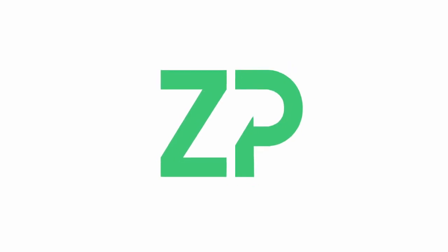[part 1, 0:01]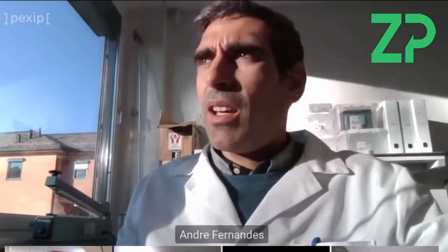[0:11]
I'm a scientist here at Zimmer & Peacock. I'm based in Norway. What I'm going to try to demonstrate is a typical characterization test that we make for every batch of glucose sensors that are fabricated. In this case, in order to have a nice staircase response, I'm actually going to use a beaker test.
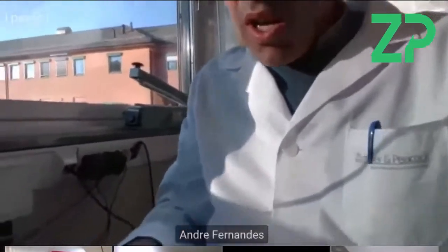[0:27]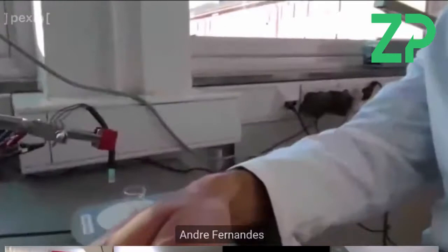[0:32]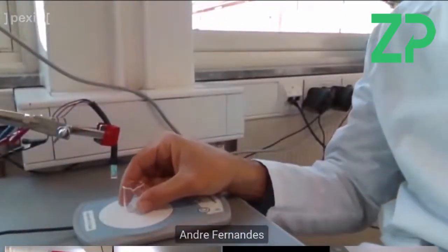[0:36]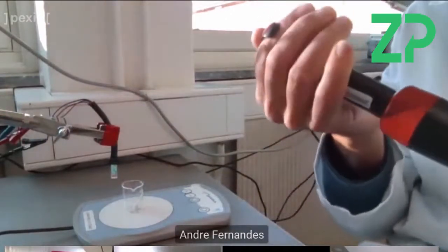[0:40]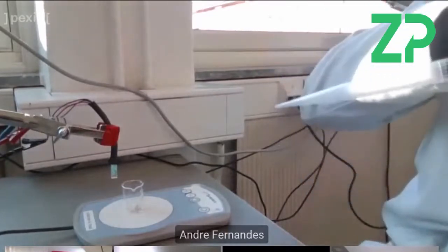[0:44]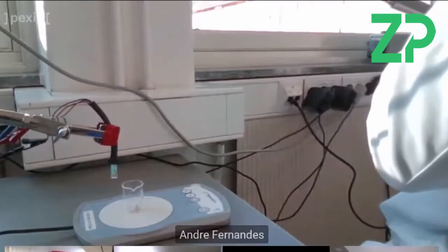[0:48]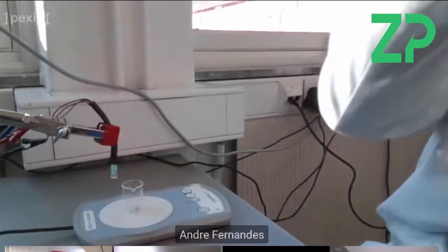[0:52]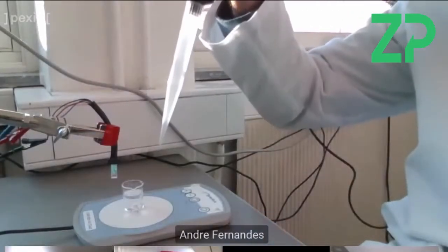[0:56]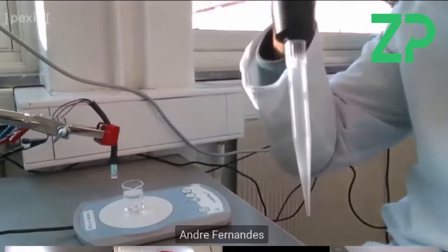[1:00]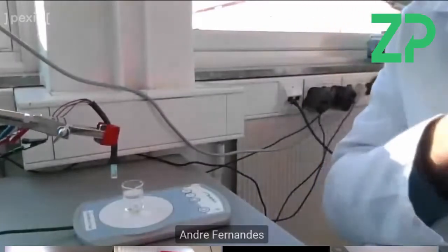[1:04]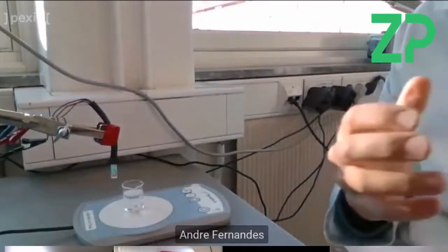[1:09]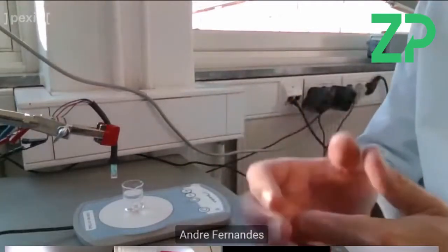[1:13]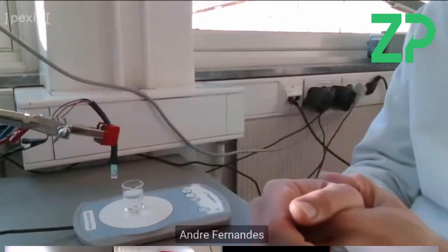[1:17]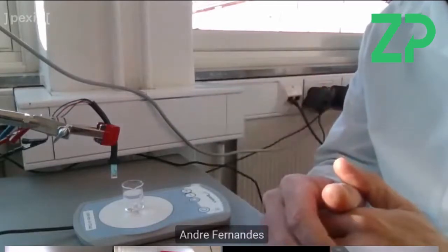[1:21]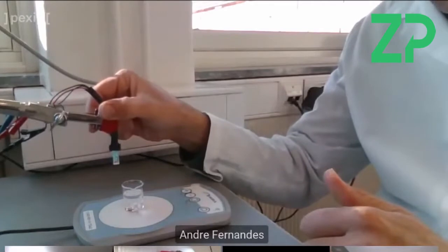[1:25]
I'm not sure if you are able to see what I am showing, but basically I have a beaker here, and I'm going to pipette 5 milliliters of phosphate buffer solution. And then I'm going to titrate different glucose, 1 molar of glucose in PBS solution, in order to measure the step response to different concentrations of glucose. So I'm going to pipette 25 microliters of 1 molar glucose in PBS, and like that I'm going to do 5 millimolar steps.
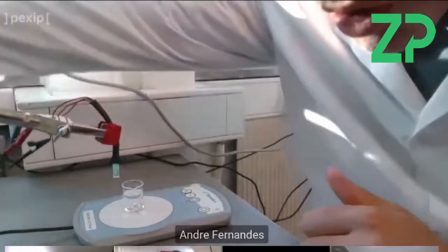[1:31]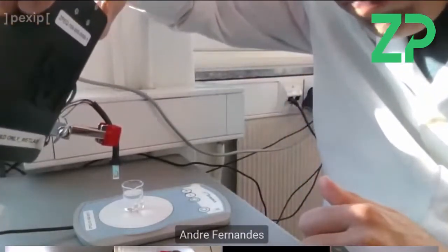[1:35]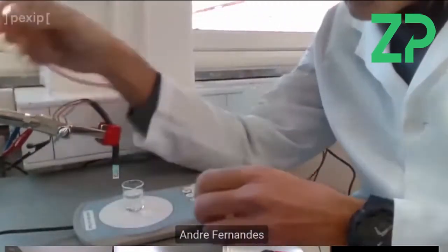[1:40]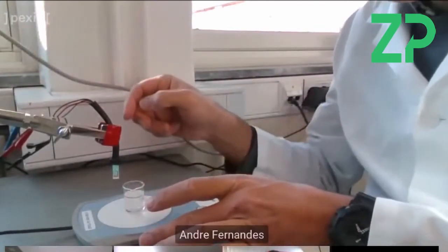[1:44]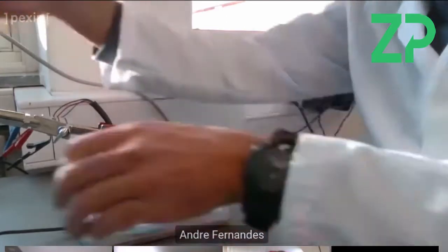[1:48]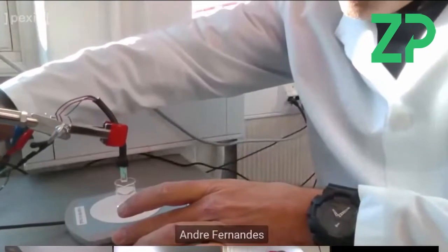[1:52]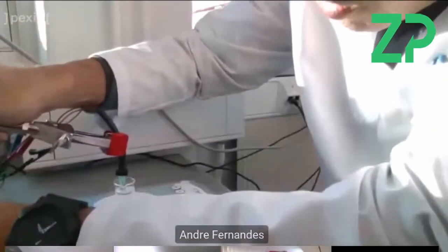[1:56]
This is one of the ZP glucose sensors, and this is all connected to one of our potentiostats. Now I use stirring in order to avoid any kind of depletion of glucose at the electrode, and so by using a stirring bar, and now I'm going to dip. Try to only immerse the electrodes.
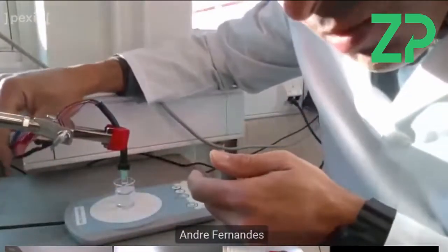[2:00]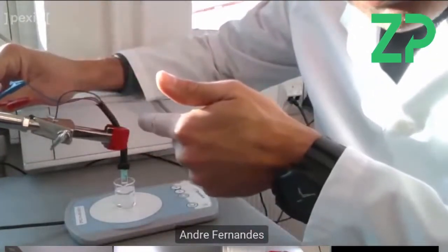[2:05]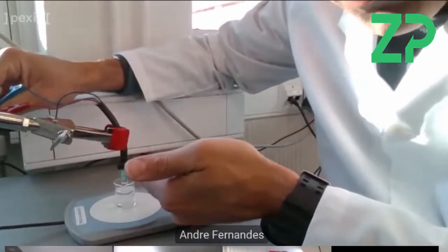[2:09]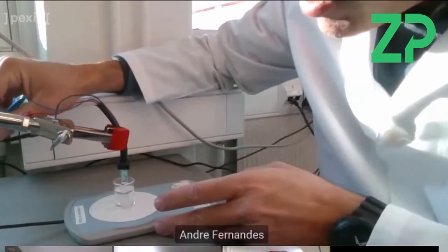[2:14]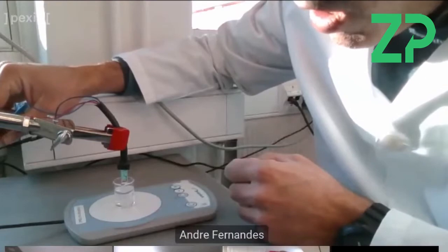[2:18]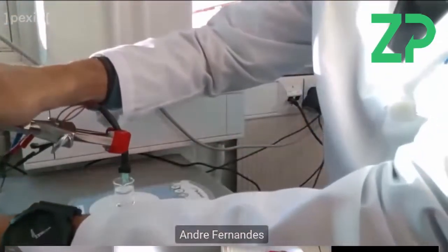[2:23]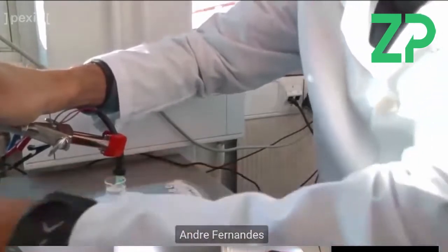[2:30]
This is important. As you can see, these are the crocodile clips that are connected to a connector that actually is connecting to the sensor physically. This is just a standard connector with a standard pitch. We are connecting it in this way. We have details about this connector on the web store, I believe.
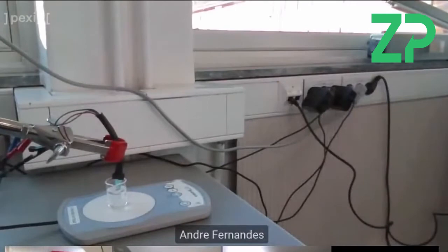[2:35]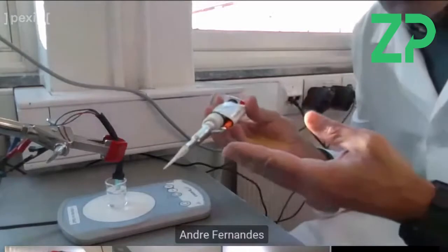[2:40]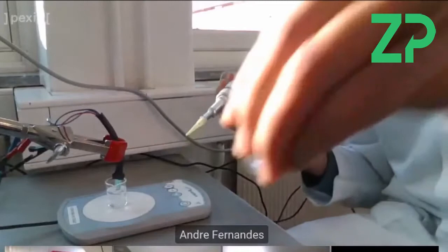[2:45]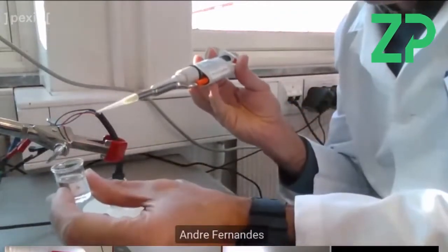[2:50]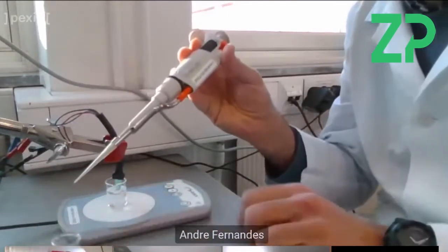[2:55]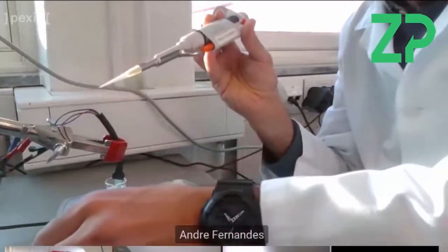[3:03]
Before I start sharing my screen, in order for you to better visualize the experiment, what I'm going to do is pipette. I transferred 1 molar glucose solution to a small beaker here, in order not to acquire directly from the bottle. And I'm going to pipette 25 microliters to the solution every time I want to see a five millimolar step. So basically that's the only thing I'm going to do. So I will share my screen with you now.
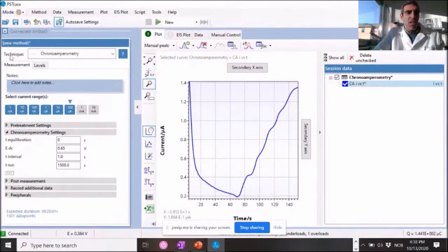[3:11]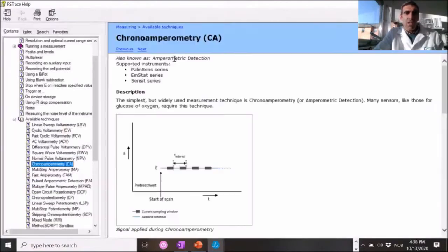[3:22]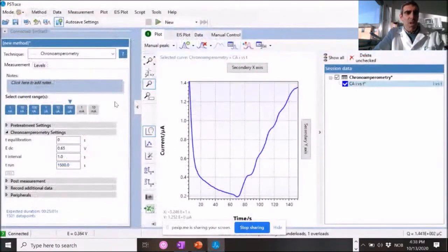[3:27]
Once this is done, we use a chronoamperometry technique. We have several techniques. If you have any questions about the technique or want to investigate a little bit further, you can use this question mark. It's very nice, and it will explain exactly what this technique is doing. Then I select the current range. For the ZP glucose sensors, I normally select between 1 nanoamp and 100 microamps. I leave the pre-treatment settings at zero. I don't want that. And I'm running a potential of 650 millivolts.
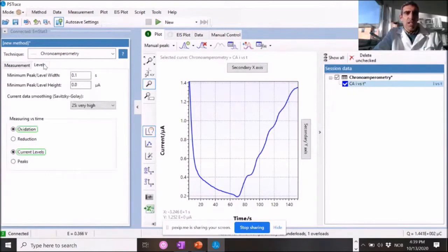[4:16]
At a sampling rate of 1 second, and I'm going to run it for 1500 seconds, not necessarily, but it's just to put some time during the time you want to have the measurement. I also do not add anything to the post measurement or peripherals. One thing that you can do in order to apply a filter to your data and smooth it a little bit is data smoothing. You can do this afterwards in the curve operations, and normally I do from no spike rejection to 25 times, which gives you, in case of any noise due to your setup or due to the stirring, a smoother curve and allows you to see the data a little bit better.
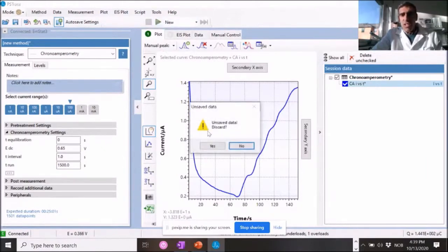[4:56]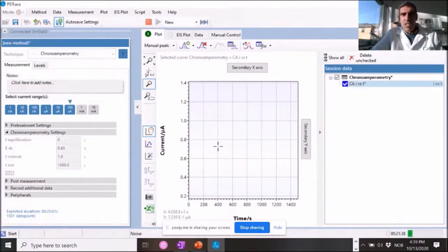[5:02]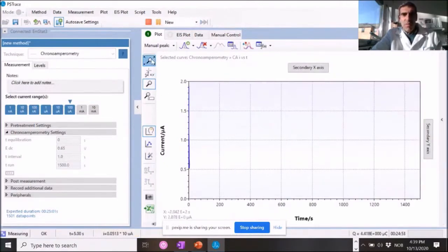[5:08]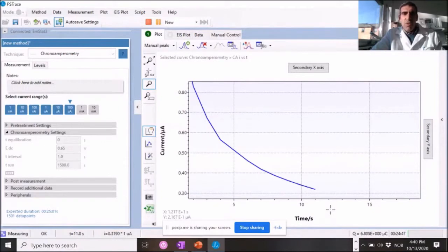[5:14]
So what I'm going to do now is start running this measurement. I'm going to discard this data; you could add to this data, but in this case, I'll just start a brand new one. I am going to hide this one to make my graph a bit better. I'm just going to zoom here. This is a typical amperometric curve. We're going to wait 100 seconds for it to stabilize. In this case, the sensor is already wet, I have used it previously, so I can do a little bit less than 100 seconds. So we'll see how the data looks.
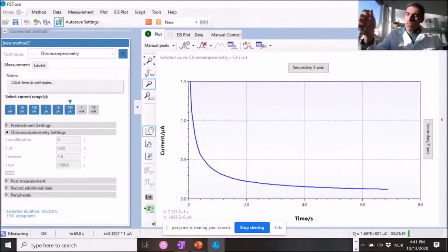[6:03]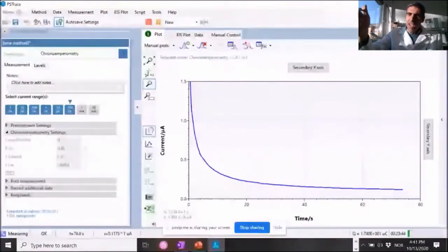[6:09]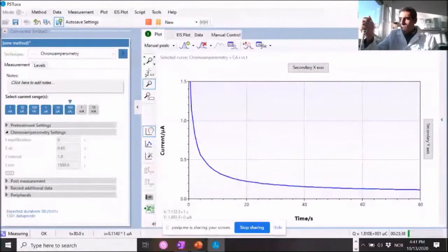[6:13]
The current range is also important, right? If for example we were limited by any chance in the current range, you'd see in the beginning probably a flat line before it would actually start dropping. This has to do with the double layer capacitance effect at the electrode side. I am starting to aspirate some of the 1 molar glucose solution into my pipette. Once it hits the 100 second mark, I will pipette into the solution and we'll see if we can see a response to glucose. In this sense, it should be a 5 millimolar glucose response. So once it reaches that mark, I will pipette.
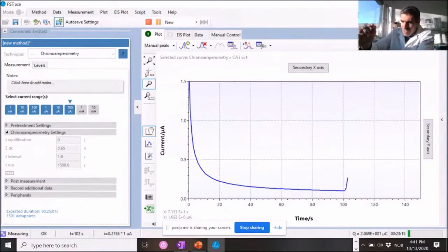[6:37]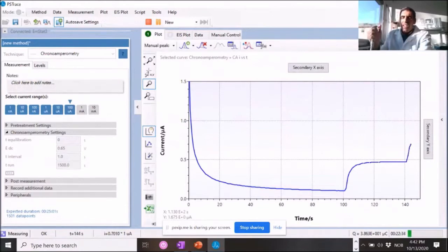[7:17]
So that's it. This is my first 5 millimolar step. We're going to wait a little bit. I'll wait until 140 seconds. Then I will add another 25 microliters into the solution. We are approaching the 140 second mark and here we go. Now we are looking at a 10 millimolar response. I'll go all the way to 25. In this instance, I will just keep on pipetting. I'm going to pipette once more now. So that's 15.
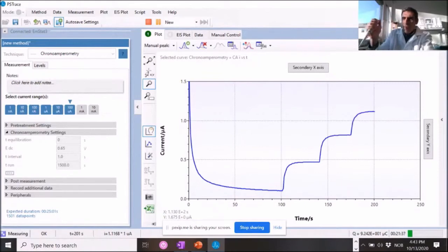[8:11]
And once more. This will be 20 millimolar. And for each step, we average the current and then we do a linear curve fitting based on the current density that we record.
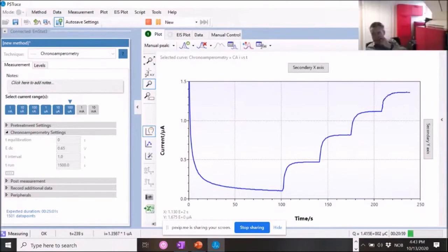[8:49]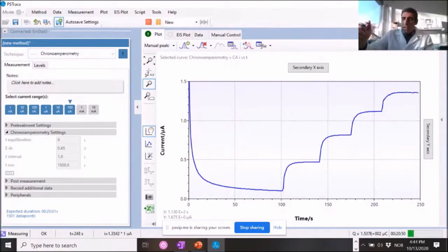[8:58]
I mean, you don't need to do much with that data. It's not like you're searching for signal, is it? This sensor is over 1 year old, Martin. 1 year old? Is it a 1 year old sensor?
It's over that. So now I'm going to pipette to 25 millimolar. As you come to a higher range, you will lose some of that linearity. But still, this one is really good. You see that the steps are slightly different from the 5 and 10 millimolar, maybe 15, but it's very good.
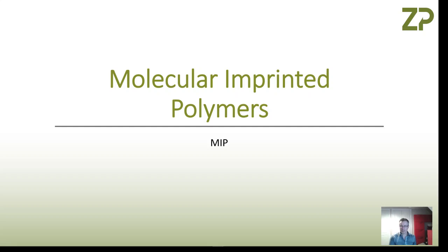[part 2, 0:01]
Hi, so this is a video about molecularly imprinted polymers, and we'll cover some keywords: electropolymerization, electropolymerization in the presence of templates, cyclic voltammetry as a method for doing electropolymerization, and then differential pulse voltammetry as a method for doing analysis.
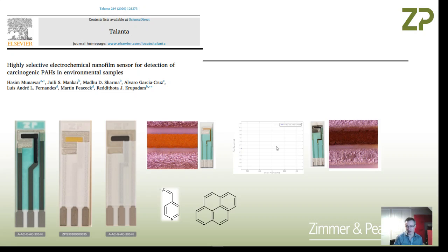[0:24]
So I have a good colleague, and he was the lead author on this particular paper. In this paper he's taken a screen printed electrode. SPEs, screen printed electrodes, I realize are quite well known to many of you. And he's taken a small potentiostat, like the Anapot. I'll put some links in below if you're not sure about this kind of thing. He's put the screen printed electrode in the front of the Anapot, and then he's able to do all his experiments in quite a small experimental setup.
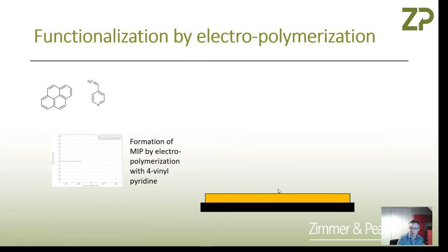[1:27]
Now, he's taken a gold electrode and he's electropolymerized 4-vinylpyridine onto the surface of the electrode in the presence of pyrene. And what's happened is the 4-vinylpyridine has polymerized and formed around the pyrene template, and it leaves pockets and pores. So let me use the next slide to illustrate that a bit more.
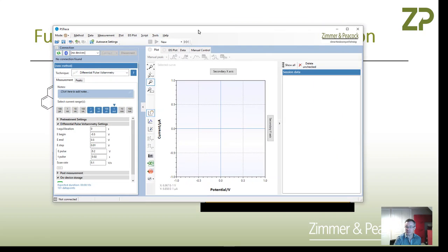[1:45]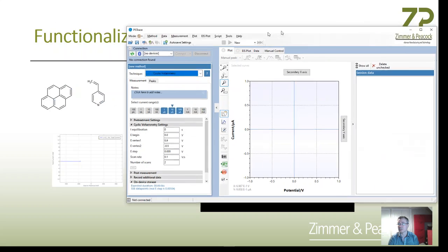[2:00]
So he's got 4-vinylpyridine in solution, and he also has pyrene in solution, and he's using a technique called cyclic voltammetry. It's probably worth saying that the nice thing about electrochemistry is we've got such a host of techniques. This software drives potentiostats like this, and you can just choose cyclic voltammetry, for example, and then set the parameters and do the polymerization.
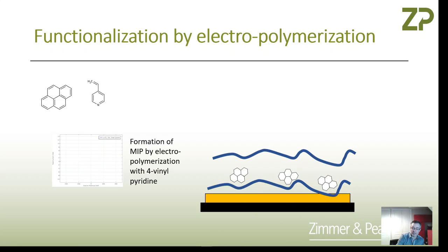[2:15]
Now, what happens is every time you do a cyclic voltammogram, you lay down a new polymer, or the monomer polymerizes. Do it in the presence of pyrene, and every time you lay down the polymer, you get pockets full of pyrene, and basically you're forming the polymer around the template. And that's the MIP, the molecularly imprinted polymer. So that's the functionalization step.
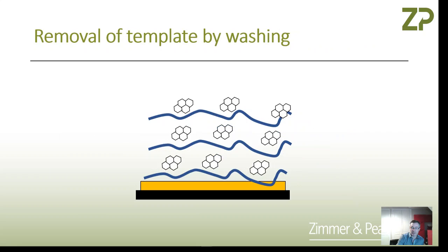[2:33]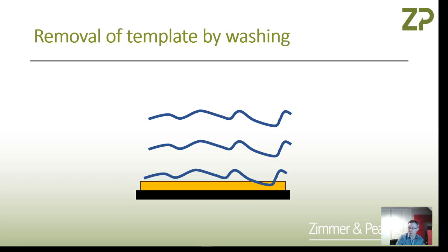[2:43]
There's actually a next step, which is washing. Because you've created a polymer in which you've got a template and you want to remove the template, you can wash it away and you're left with pores and pockets that are the shape of the molecule of interest. So you've taken the working electrode or a screen printed electrode, and you've converted it from just a bare surface, bare carbon or bare gold or maybe bare platinum, into something that's functionalized. And now you can sense with it.
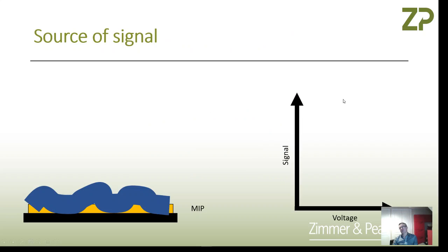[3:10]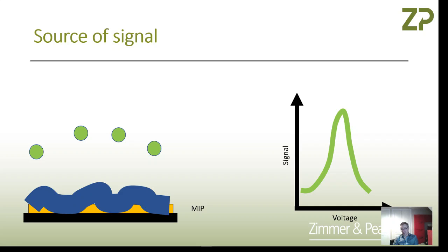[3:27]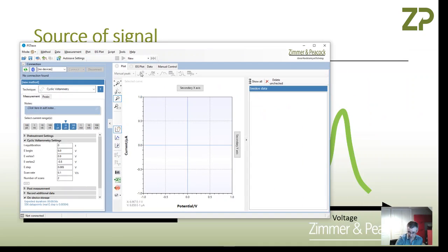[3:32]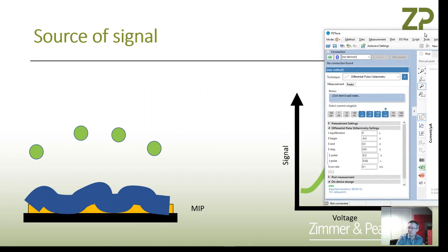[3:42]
In this case, he was interested in being able to detect polyaromatic hydrocarbons, PAHs. Pyrene is a PAH. To sense with this, you can use what we call a reporter molecule, ferrocyanide, for example. And now he's using a technique called differential pulse voltammetry. Again, that's the beauty of electrochemistry, that you can change the technique quite readily and go from cyclic voltammetry for the synthesis of the sensor to differential pulse voltammetry for the analysis.
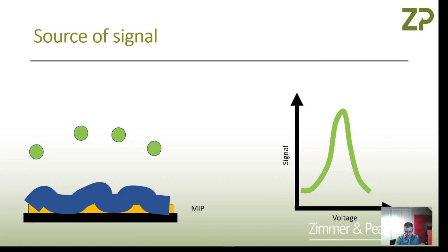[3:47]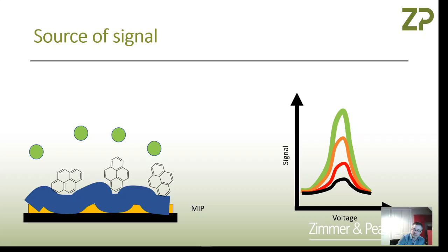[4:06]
It could have just as well been square wave voltammetry. But what happens is he takes a solution of ferrocyanide, does DPV and gets quite a large signal. But then by adding in pyrene, he starts to block and occupy the surface, and with concentration, the signal gets smaller and smaller. So you have a peak height or signal which diminishes with increasing concentration, and that's the source of the signal.
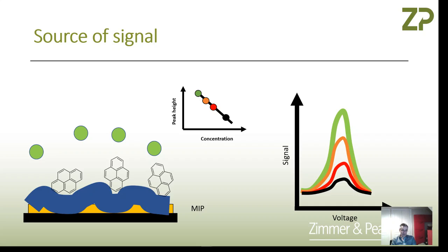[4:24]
So what I was trying to explain tonight was that electrochemistry is very powerful. You can form polymers directly onto electrodes using electropolymerization. But if you do it in the presence of templates, you don't just form a polymer, you form a molecularly imprinted polymer. You can wash away that template and you're left with pockets and pores. Then you can use those in sensing, as the polyaromatic hydrocarbons rebound onto the surface, by having a reporter molecule like ferrocyanide. Differential pulse voltammetry can detect ferrocyanide, but as the PAHs bind, you block the surface and the signal goes down.
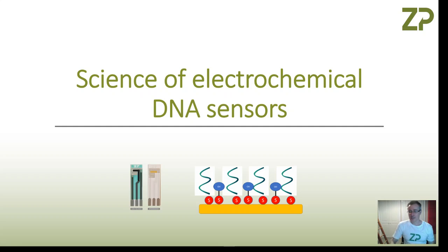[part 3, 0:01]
Hi, so this is a video about some of the science behind electrochemical DNA sensors. So at Zimmer Peacock, we like to make electrochemical biosensors as contract development and contract manufacturing. And we often do it on these kind of screen printed electrodes. So this is a screen printed gold electrode, and this is a screen printed carbon electrode.
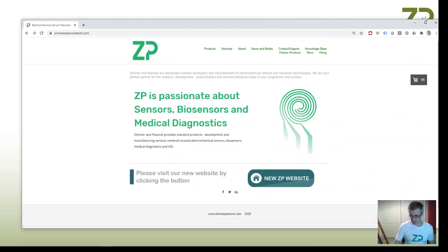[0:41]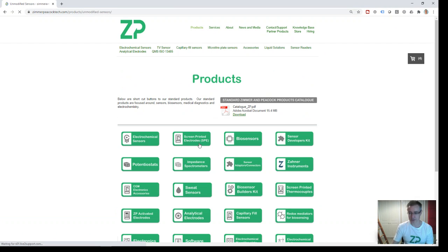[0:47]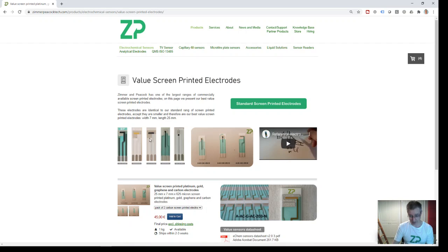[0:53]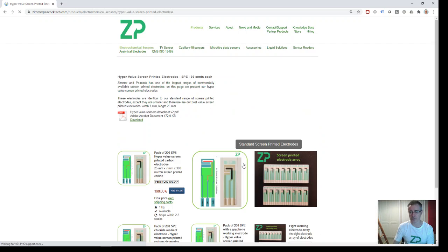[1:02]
And the reason we like to do that is because you can make screen printed electrodes at volume. And when you get to volumes, they can also be quite low cost. And so my recommendation, and I'm just going to do this very quickly, is if you're thinking about making a DNA sensor, then there's probably a couple of sensors I would recommend. If you go to screen printed electrodes, we've got the value electrodes, and we've got something called the carbon 303, and we've got the gold 303. It would be perfect if you could actually do it on what we call the hypervalue electrodes. And the reason being is that they're already very competitive in terms of price.
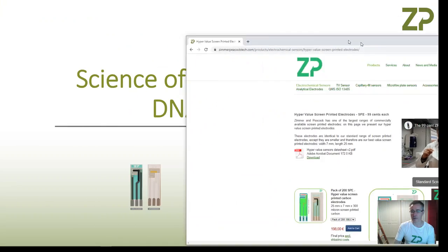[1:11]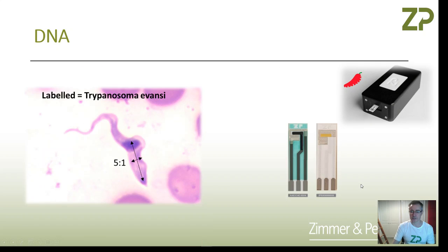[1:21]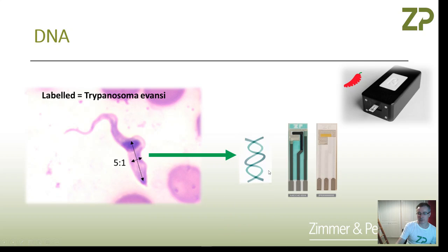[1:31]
But let me come away from that now and talk about what I really want to talk about today, which is the science of DNA detection. So first thing I want to touch upon is, we're imagining that there's some organism, some virus or bacteria, and you want to do the detection on this. And so you're going to have to extract the DNA from that organism.
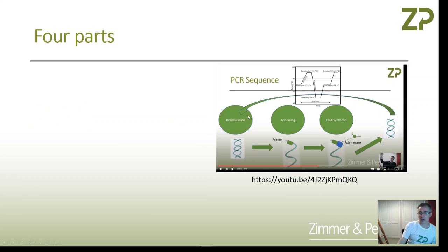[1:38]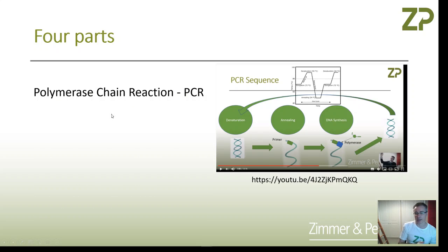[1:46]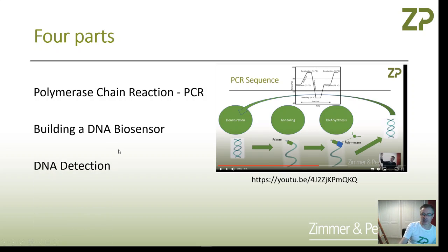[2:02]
And what I'm going to say is, we have another video on DNA detection. And in that video, we talk about PCR, polymerase chain reaction. We talk about building a DNA sensor, which is really answering the question: how do you take a carbon electrode and gold electrode and give it specificity towards the DNA that you're interested in? And also then having to do that DNA detection itself. So I am going to put a link in. If you're watching this on YouTube, I'll put some links to that video so you can watch that, because that video has stimulated this video, because the question that people asked was,
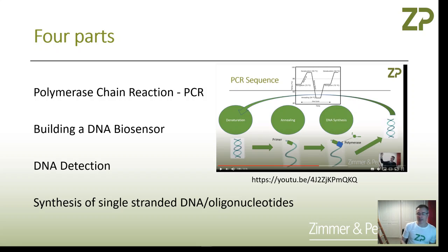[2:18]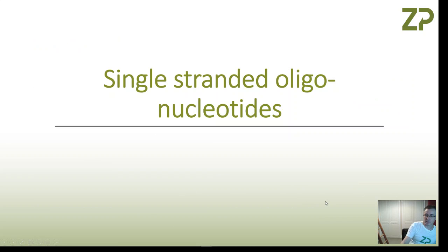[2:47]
if you're going to turn a screen printed electrode into a DNA biosensor, then you're going to have to give it specificity. And in the case of DNA, you can give it specificity by making the complementary single-stranded DNA or oligonucleotides. So what I will do is I'm just going to go down slightly
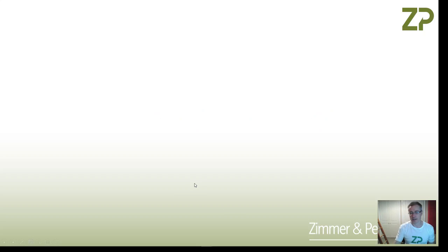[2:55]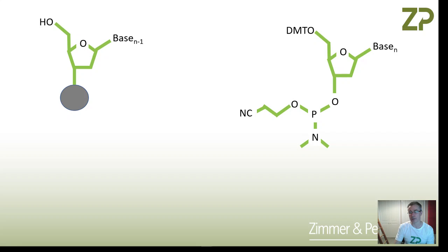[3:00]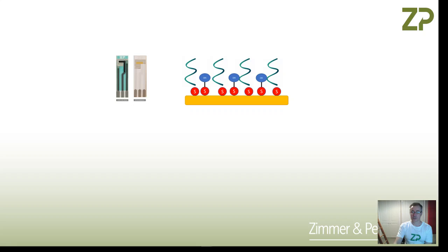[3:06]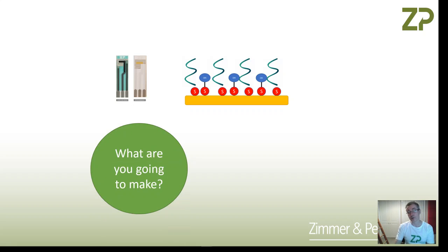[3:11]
and warn you that there is a fair amount of chemistry in this. So I'm not going to dwell on all these. We're going to go through a cycle in a minute called the phosphoramidite cycle. So I've just skipped through a few chemical structures quickly. But what we're not going to talk about is what you are going to make. And so if you're making a DNA sensor, I would ask you to watch the other videos. We take the single-stranded DNA, and this allows us to detect the complementary single-stranded DNA.
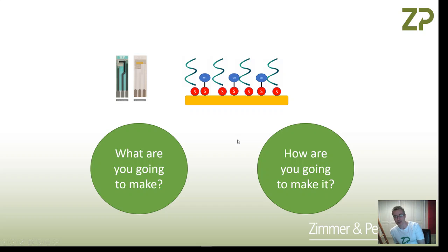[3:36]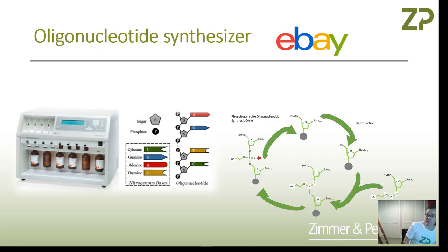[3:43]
So the first question is, what are you going to make? And that's really based on what do you want to detect. The next question is, how are you going to make it? So this video is really about how to make that single-stranded DNA. And the first thing to say is, it can be fairly easy. Well, I say fairly easy. There's two ways of going about this. You can either buy the equipment, and I did have a look on eBay this evening, and this kind of equipment
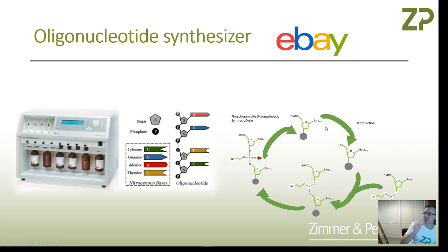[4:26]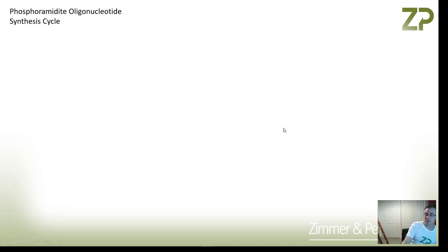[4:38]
is available on eBay. And then basically it's a system where you have reservoirs of the bases that you need. So DNA is made up from cytosine, guanine, adenine, and thymine, and you have all these bases, and you pump them, and you go through this phosphoramidite synthesis cycle, where you attach bases to bases to bases, and then you make yourself this short strand of DNA. And I'm going to describe next the cycle of it, but I'm also going to finish the video by saying, you don't need to make it. Actually, there are quite a few services around where you can design the DNA that you want, and then other companies will make it for you.
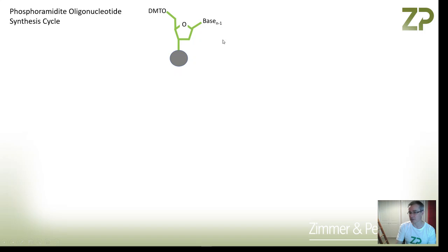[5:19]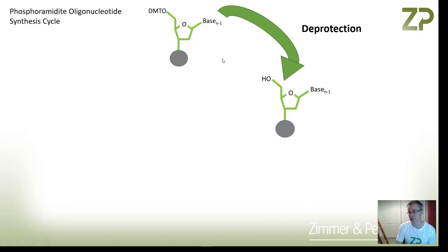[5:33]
So first of all, let me describe this phosphoramidite oligonucleotide synthesis cycle. So the first thing is you start off with a base, and here it's got what's called a protecting group on it. So you literally start off with almost the first base that you want, and you deprotect it. Now, when I say you deprotect it, if you've got one of those synthesizers, there's a protocol for the deprotection. And I'm sorry that there's all this chemistry in it, but the first thing that's going to happen is we deprotect it, so this group here becomes just a simple OH group.
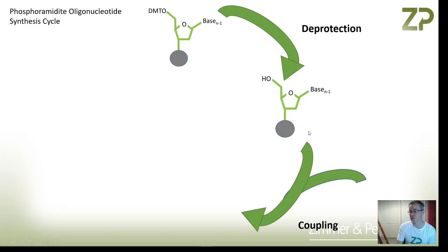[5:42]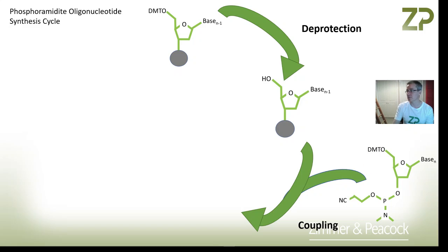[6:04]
And then what you could do is you're going to couple that OH group to a new base. So we bring in another base, and it has a phosphorus atom here, if you notice, and that phosphorus atom is activated with this nitrogen to react with this OH group here. I'll move my picture out of the way and put it there. So this phosphorus here is activated for coupling to this OH here.
So we have a deprotection step. Here, this becomes a simple OH, and now that OH is ready to react with this phosphorus atom. And we basically conjugate these two, or covalently bond these two bases, so now they are together. Rather than just one base and then a second base, we have them together.
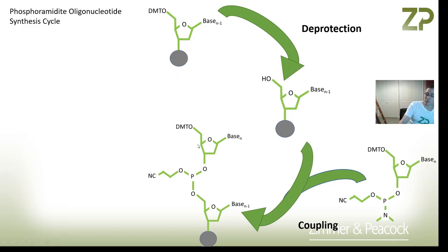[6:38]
And so what's next is something called capping. In capping, what you've done is you've actually oxidized this phosphorus atom, so now it's got a double bond O to it. Here you had one, two, and three oxygens, and now you've got one, two, three, and four oxygens. As I say, that's the modification. And then you go through the repeat cycle again.
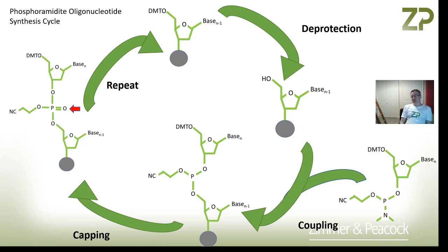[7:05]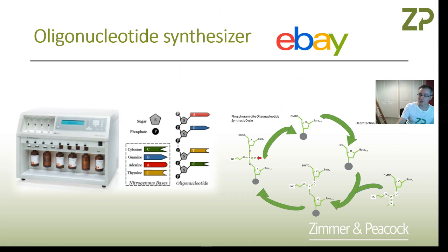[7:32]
So it's basically a cycle of starting off with one base, deprotect it, couple it, cap it, do it again, do it again, do it again. Every time you go around, you're increasing the length of the oligonucleotide, or the length of this small single strand of DNA. And you can do that manually, but there also is equipment out there, and this equipment really is just pumps and valves and reagents, and it does it for you.
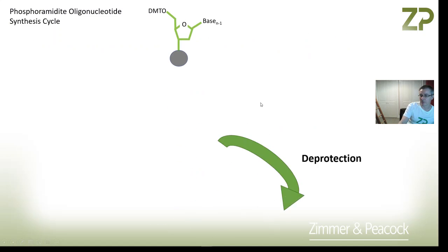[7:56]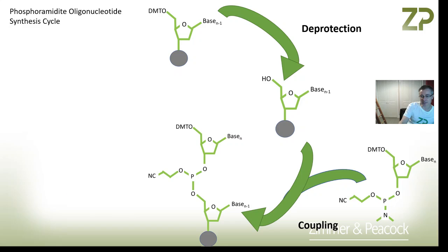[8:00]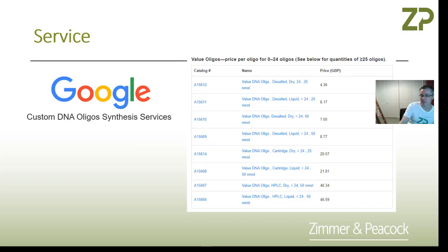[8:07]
And like I said, I'm not promoting eBay, I have no association with eBay, but you can even get this kind of kit on eBay. I had a look this evening, I saw something for about $15,000. And all this equipment is really doing is just running you through this phosphoramidite oligonucleotide synthesis cycle. So if you like chemistry, then you'll like that slide.
And then I want to say, really, you don't need to do this. You have to know what you want to make. And if you're not sure what to make, you're probably best off partnering up with a molecular biologist. That will help you answer, what do I need to make? But then the question of how do I make it? Well, you can make it through, for example, a process called the phosphoramidite oligonucleotide synthesis cycle.
And actually, you can get equipment to do that, and all the equipment is doing is going through the cycle one step at a time and building up the length of DNA. Now, I know that that kind of technology has been around for a good 40 years now, and there are more modern ways of doing it, but in the end, it can be fairly straightforward. But what I want to say is you don't need to do it.
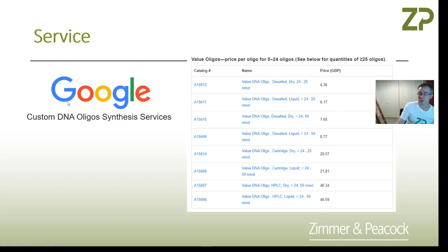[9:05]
What I would like you to do is just Google a search called Custom DNA Oligo Synthesis Services, and you'll actually find lots of people offering. As long as you know what you want to make, they will make it for you. And I was looking at the prices, and they charge you per base, and it's really not so expensive.
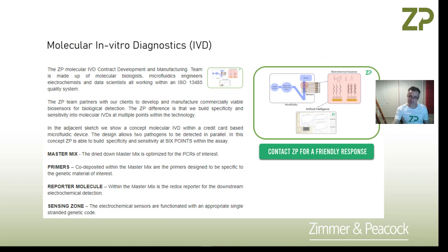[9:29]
So in previous videos, we have talked about how at Zimmer & Peacock, we manufacture screen printed electrodes, and we manufacture these small potentiostats that work with those screen printed electrodes. But in order to turn a screen printed electrode into, for example, a DNA detection, you probably need to functionalize either the gold or the carbon electrode with a complementary stranded DNA so that you can capture and then detect the DNA. I bring up this slide because at Zimmer Peacock we're quite unusual in that we have electrochemistry in house, we have chemistry in house, and we also have molecular biology in house as well.
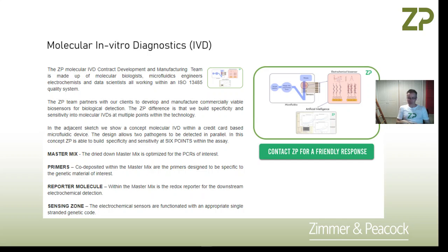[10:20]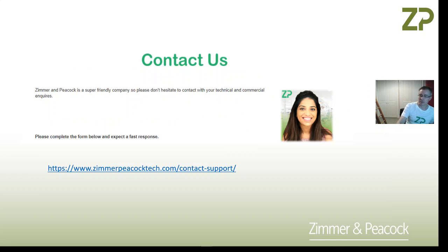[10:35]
So this cycle of designing the assays for DNA detection is quite straightforward for us, but with this video I'm trying to give you an insight into how you can potentially do this for yourselves. So I'll finish on this note: in order to make a DNA sensor, you probably need a carbon electrode or gold electrode. The next thing you'll need to do is put on a single strand of DNA, and you would have to design that single strand of DNA by knowing the target that you're interested in and then designing the complementary DNA for it. And then you have to immobilize that onto a carbon or gold electrode.
You can synthesize those. And I've had a look into the synthesis versus just paying for it as a service. And so my recommendation is I think it's economic just to pay for it as a service.
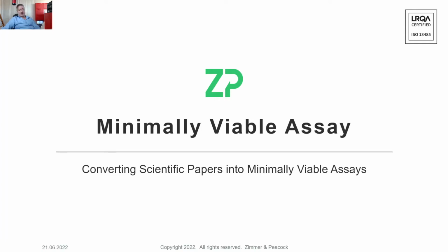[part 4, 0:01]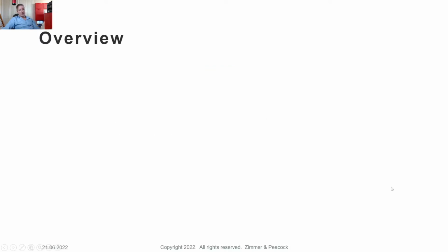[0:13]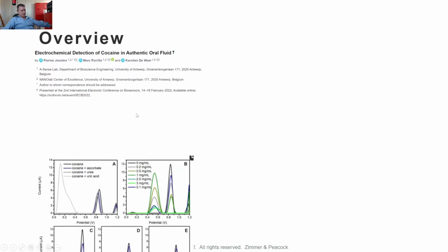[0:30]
Hi, this is part of our series on how to convert scientific papers and presentations into minimally viable assays, and I'll explain what we mean by a minimally viable assay in the next slide. So as an overview, in scientific papers, and here I'm referencing the electrochemical detection of cocaine in synthetic saliva, but actually maybe also in authentic oral fluid.
In the paper, there's a couple of things that resonate well with us at ZP. They're using a screen printed electrode, and they're also using voltammetry. In this case, they're actually using square wave voltammetry. So what we're saying is that there's a lot of value in scientific papers such as this, because there's a real world application, and driving under the influence of narcotics is a problem.
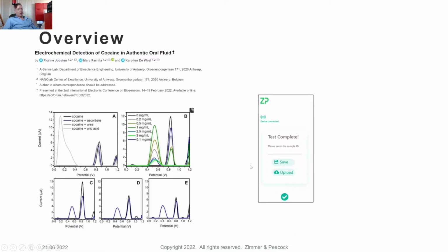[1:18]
So therefore, you might want to do a roadside test, if you're police, and check that somebody's not got cocaine, for example. You could detect it in the saliva. But of course, what we need to do is translate this kind of research quite rapidly into at least a minimally viable assay. And the idea of translation into something more commercial is to have, for example, the result on a smartphone.
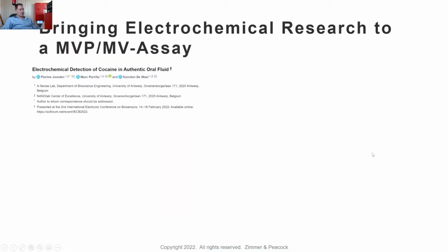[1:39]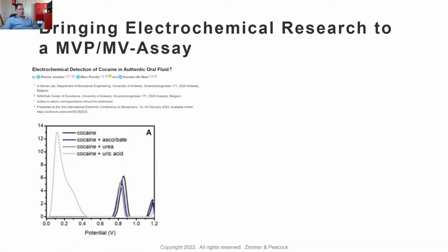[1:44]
So what I want to talk about now is the stack of technologies that we have at ZP for putting this kind of data pretty rapidly into a smart device. So let me jump into that. As we say, there's the original paper. The original paper's got a lot of information in it. They have the voltammetry in there. They also discuss the interference molecules. So it's definitely a good start in the concept of bringing a technology out of the lab and into, let's say,
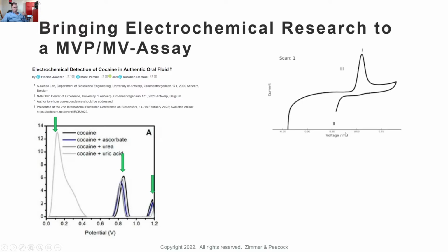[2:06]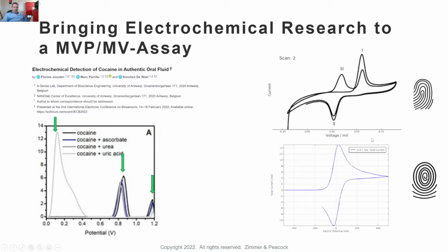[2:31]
real world application. Now, I noticed that one of the primary authors of this paper also has the same philosophy as we have at ZP, that as interesting as voltammetry is, it's really a fingerprint. So here I have the voltammetry of an organic molecule, and also the voltammetry of an organometallic molecule. And as I say, I think we're also in agreement with the author of this paper, these are real fingerprints. They're fingerprints for these particular molecules. And so cocaine also has a fingerprint.
It has a fingerprint for two reasons. It has a voltage at which it's oxidized, for example, and it also has a particular shape that could also be indicative of the cocaine itself. So within the context of the sample, if you thought somebody was under the influence, you asked them for maybe a fluid sample from the mouth, at which point you find a peak just in the right position, and you've already checked that uric acid and ascorbate are not overlapping with it. Then you can start to deduce that this is potentially cocaine and treat its shape and its position as a fingerprint.
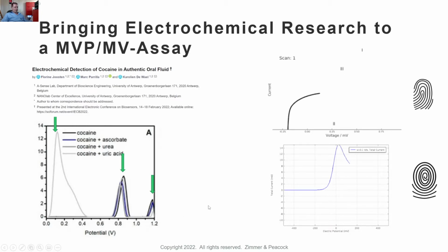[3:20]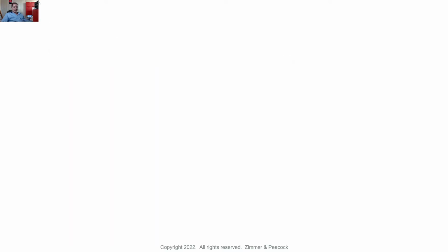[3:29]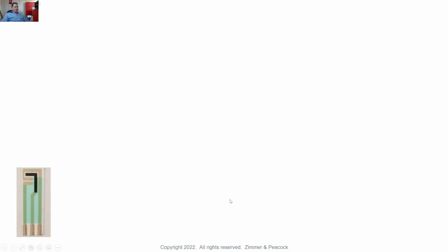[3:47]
Now let's jump a bit more into how to convert this scientific paper into a minimally viable assay. The term minimally viable assay is really a play on minimally viable product, which is a Silicon Valley concept, where it's really the bare bones product, or in this case bare bones assay, that could make this commercially useful, or at least get it out of the lab and into the world. So the things that we have at ZP that allow this to happen: we have our screen printed electrodes. For example, our screen printed carbon electrodes are maybe 50 cents each. So they're super low cost. That's a good start. When I say 50 cents each, I mean we're talking low volumes. People can buy low volumes and get these at 50 cents each, which is a good start.
We have a potentiostat, but we actually treat the potentiostat in a very different way, and I'll explain that in a minute. And then we also have Julie, and Julie is kind of critical. So Julie is an online database. It's probably the only proprietary or commercially available database where people can open accounts and upload data from Autolab, from PalmSense, from CH Instruments, from ZP.
And so they can essentially put electrochemical data into this database, and also crunch the data as well, which I will sort of discuss a bit more now. So what we're thinking is, you'll take these super low cost sensors, which are also really high quality, use them with a meter. The sample goes on there, and in that sample, we're expecting that the person is under the influence of a narcotic. In this case, it's cocaine, and we're able to detect that cocaine.
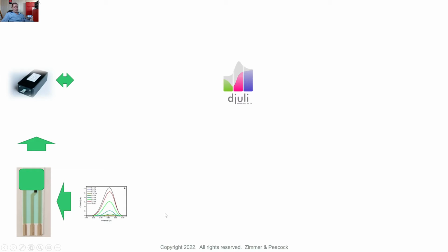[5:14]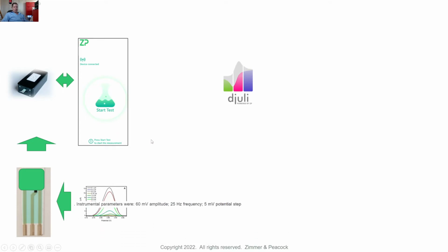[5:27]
Now, what we're imagining is, and we have this technology at ZP, is there's really an app, and the app tells the meter what to do, and the meter gives the raw data back to the app. So now the app knows what to do because wonderfully you can find the square wave voltammetry conditions in the paper. So these papers are really useful because they give you proof of principle, they give you raw data, they give you conditions, and so almost everything is there. It's just we've got to bridge the gaps now to make it into a minimally viable assay and a minimally viable product.
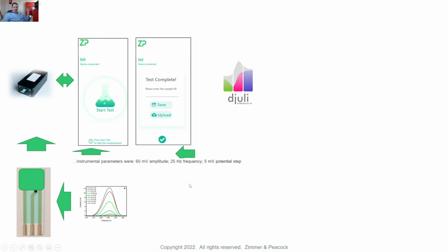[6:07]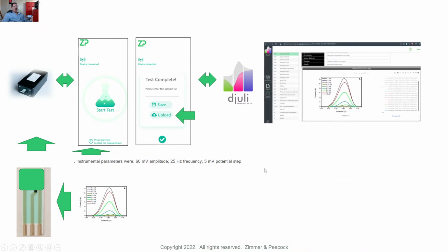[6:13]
So we can program the app quite quickly to have the conditions. The app tells the meter what to do. The meter gives the raw data back to the app, and then the app has an upload button, and the upload button sends the data to our djuli database. So in fact, that data ends up in a database, and as I say, I think this is the only commercially available database where electrochemical data can be stored, analyzed, and reports can be made on it.
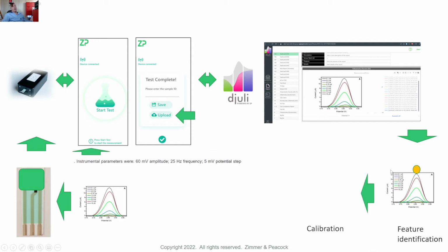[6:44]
But what we're doing in that database, for example, in an example like this, is actually putting the data up there. Now, again, this is a fingerprint, so we spot and authenticate that this is, for example, cocaine. So we can do feature identification and say that is cocaine, for example, or at least give a certainty of whether it's cocaine or not. You can do that as a percentage, and then we can beautifully also, as long as people are using this screen printed electrode from ZP, the calibration data in these papers and presentations is also useful, because now we can quickly use the calibration curve. We can look up, for example, the peak height and drop down and actually find out what the concentration was for cocaine.
Now, if there are things like baseline correction or moving average, all these things are also available in the djuli database. So this is really great, because what djuli allows us to do is send raw data to the cloud, change or condition the raw data, then put it through so we can at that point qualify what we have. Hopefully in this case it's cocaine. Once we've qualified that this is cocaine, then we can put it into the calibration routine, essentially just look at the peak height in this case versus concentration and determine that, for example, this is 2 micromolar.
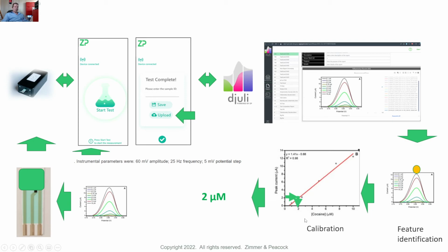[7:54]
So what we've described here then is that with a paper like this, we can very quickly translate from raw voltammetry that would be in the scientific literature to something much more meaningful that can go back to the phone, and somebody can then actually have a sense of, I tested your saliva in the field, I put the saliva onto the sensor, the app ran the meter, gave the data back to the app, sent the data to djuli, processed the data, we went through a calibration routine, and we came back with a result of 2 micromolar, which could maybe allow the officer to take, let's say, the suspect in this case back to the station for a further blood test to get a definitive result on that.
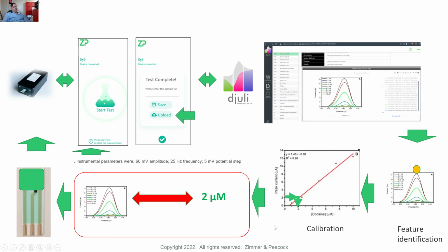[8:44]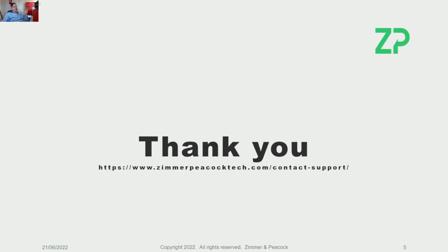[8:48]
So what we've described in this quick video really is the idea of taking a scientific paper which is rich in voltammetry, calibration, interference testing, has the conditions for the square wave voltammetry, and then how we would actually take that and essentially create a minimally viable assay, which could then be rolled out and at least beta tested in the field.
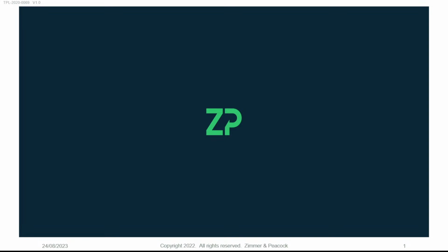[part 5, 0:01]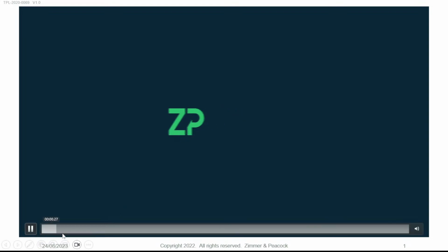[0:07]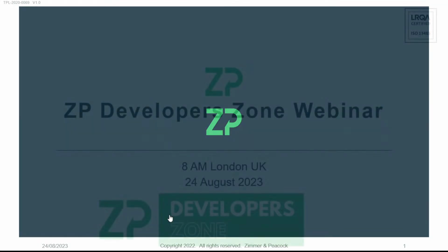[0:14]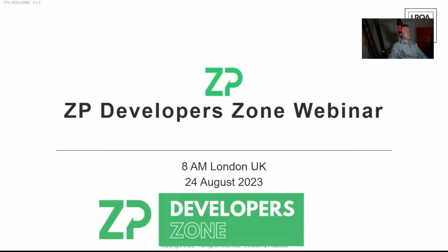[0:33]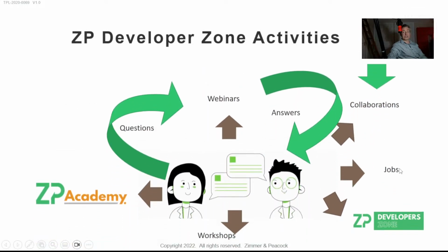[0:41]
But we use this Developer Zone to answer questions that came in during the week. I'm going to talk fast. There's about 7 questions here, and I just literally have to jump into it.
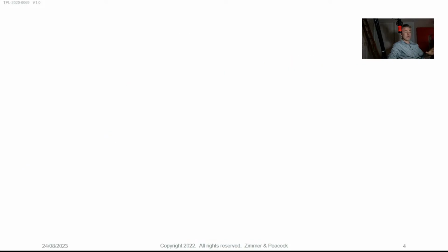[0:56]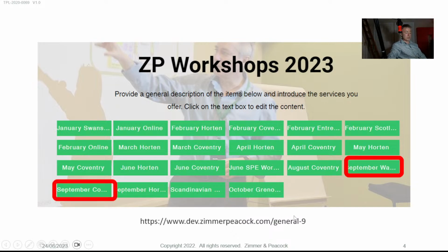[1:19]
Now on the workshop front, we just had a workshop. In fact, we had a workshop in September, and I'm delighted that there are 2 guys coming from Australia in September. So these are international workshops, and people are literally flying halfway around the globe in order to come to them. These workshops are about IVDs and biosensors in general. We do have workshops in the UK as well.
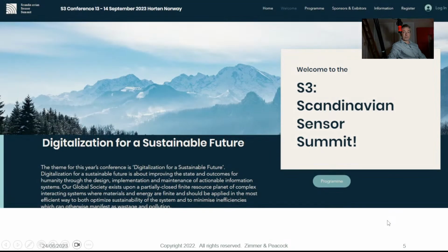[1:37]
So we have workshops, we have conferences. Now talking about conferences, we do have our big Scandinavia Sensor Summit, which makes a lot of sense because the 2 guys who are coming from Australia, for example, are coming to a really comprehensive workshop on biosensors, CGMs and molecular assays. They're coming on the 11th and 12th, and then because they've come such a long way, they're going to stay for the 13th and 14th for the conference. So thanks to those guys.
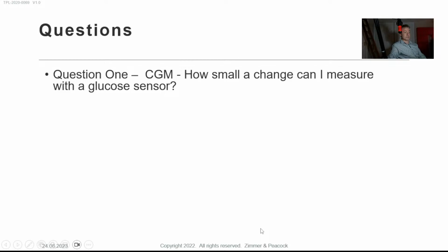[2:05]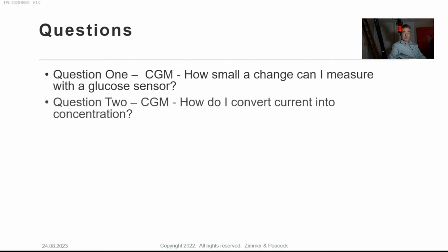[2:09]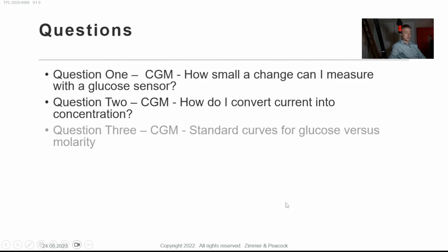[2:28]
Now in terms of questions, question number 1: how small a change can I measure with a glucose sensor? Question number 2: how do I convert current into concentration? The answer to question number 1 is it can probably be quite small, but if I was going to give you what I consider a conservative answer, 0.1 millimolar. Number 2, how do I convert current into a concentration? You come up with a calibration curve. I'll show you how to do that.
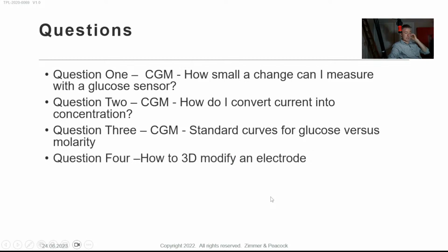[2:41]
Question number 3 is really linked to number 2. You create what's called a standard curve with glucose signal or current versus concentration. I'll describe that. Question 4: how to 3D modify an electrode. If you have a new material and you consider that it has some special properties, then I think 3D printing onto a traditional, let's say, screen printed electrode is a good way of doing that step change and showing that you have some increased performance. It also gives you a complete electrochemical cell in a form factor that's applicable at least to the IVD market, the in vitro diagnostics market, and is one step closer to being compatible with, or demonstrable to, the wearables market.
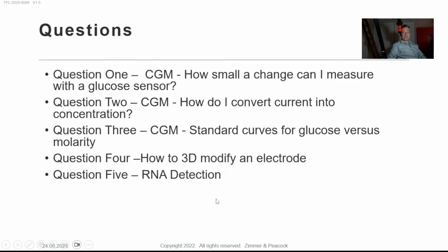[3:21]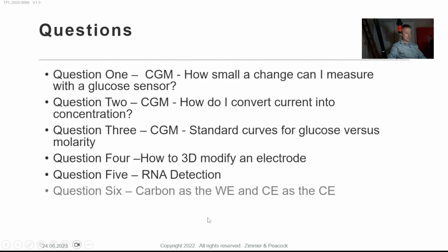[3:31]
Number 5 is about genetic testing. Genetics can mean RNA, DNA. Well, genetics is strictly speaking DNA, but when people talk about genetic testing, they kind of mean molecular assays. So I'll talk about RNA and DNA assays. Somebody else wants a screen printed electrode where the working electrode is carbon and the counter electrode is carbon, and they actually want silver chloride as the reference electrode.
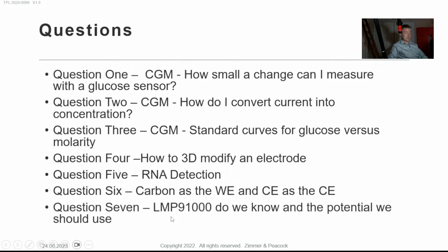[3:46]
I'll deal with that. Somebody else asked, have we heard of LMP91000? And should they use it? The quick answer is we have used it in the past. I do not recommend it these days. There are much better chips. I would look at the more modern open source potentiostats. I actually think the world has changed. Open source potentiostats are an interesting university exercise, but there are so many good chips out there these days that it's more about programming than doing electronics. Anyway, I will discuss it. Yes, we have heard of it. And by the way, if you're going to use a ZP sensor with your own open source potentiostat, the potential that you need to apply at the working electrode versus the reference electrode is 650 millivolts.
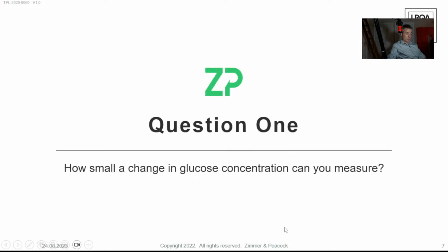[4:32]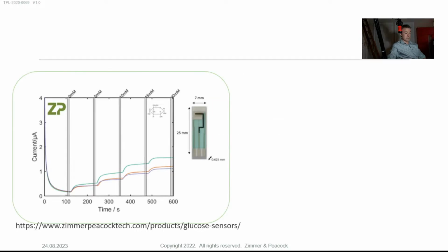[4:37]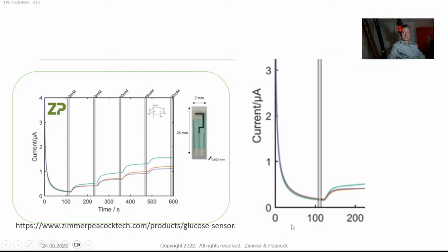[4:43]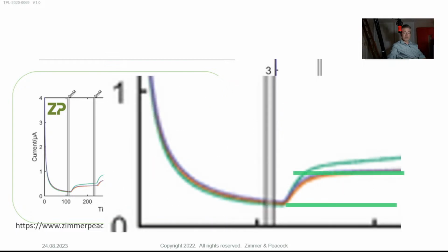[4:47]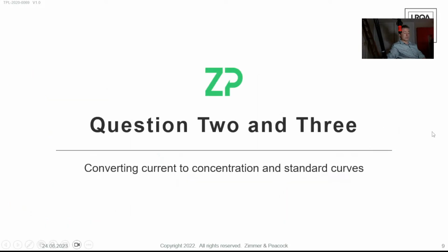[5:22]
If you set up an experiment and have bad connections, then you'll have noise, and so it'll be hard to resolve these little steps. But you should really be able to resolve 0.1 millimolar of glucose. So I essentially wish you good luck with it. And I will plow into your next question.
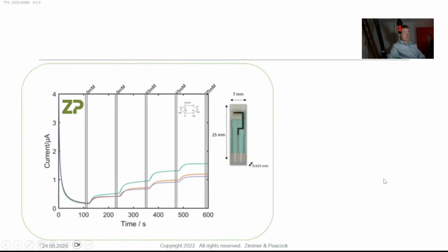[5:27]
Your next questions 2 and 3 are really linked. I just showed this curve. This is a standard curve of current versus time, but it's actually also concentration, because this is 0 millimolar, 5 millimolar, 10 millimolar, 15, 20 millimolar. We call this a staircase experiment. It's an interesting question, because we do this experiment in our workshops, but we also have a lot of YouTube videos about how to measure a CGM and how to measure a glucose sensor. So we do have them on our YouTube channel, but this is the standard curve.
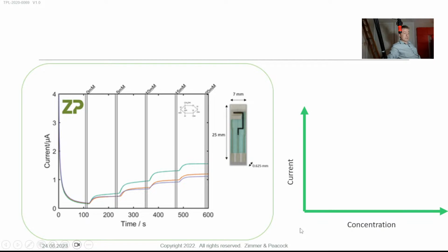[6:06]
There was a link to it on the previous slide. Simply, we can now construct it. This is 0 millimolar, so I should have put that concentration there as 0 millimolar, that's the current.
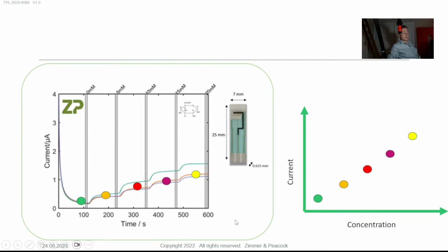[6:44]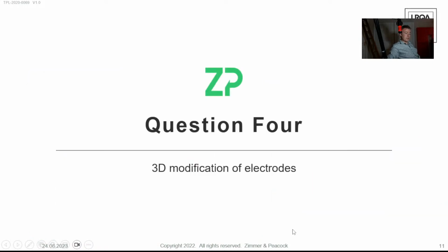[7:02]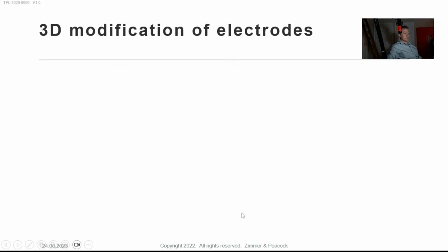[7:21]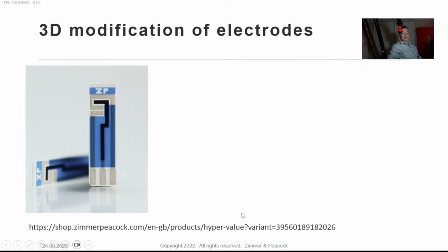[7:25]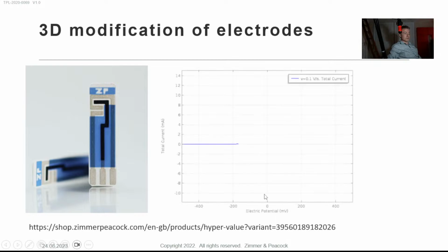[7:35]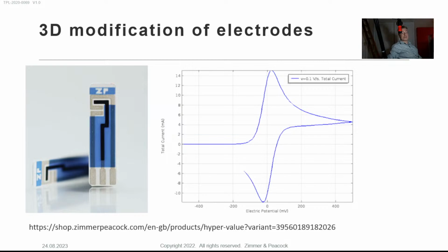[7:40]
Question number 4. So you've got a new material. It may be 3D in nature. How do you show its stepwise improvements to people like ZP who are interested in IVD and also interested in wearables? I'd say take a standard electrode like this. I've obviously linked to it here. These electrodes are super cheap, so it allows you to break them and destroy them whilst you develop your process. You've got to have a low cost electrode to do this. And you can get a signal using ferrocyanide. I do have a link to that solution below, but this is a fairly standard electrochemical procedure.
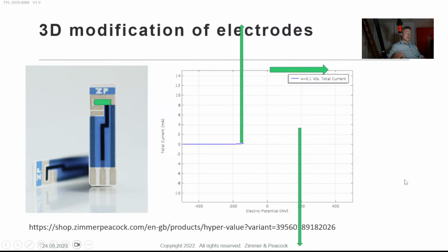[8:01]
So you baseline yourself using standard chemicals, then you modify it, and when you've modified it, I suspect the peak height will go up, and I suspect the peaks will shift. The reason they'll shift is because you're pushing more and more current through the circuit, and you'll suffer from something called IR drop. You can then instigate IR compensation. For me, it doesn't matter too much. I know what the phenomenon is, I don't mind, but people do get a little concerned about it. If they're publishing papers in academic journals, they would get concerned about it. If you're a pragmatic industrial electrochemist, you don't get too concerned because you know what it is, and you can mentally deal with it. As long as my signal is versus concentration, I'm quite happy.
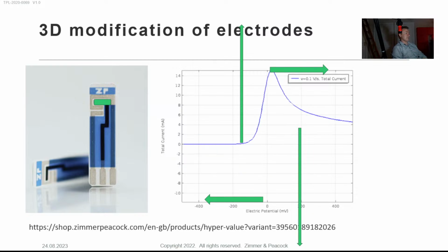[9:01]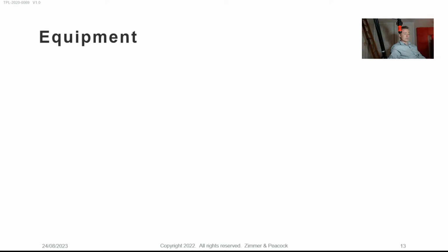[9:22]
So if I was to go backwards slightly, you've got a new novel material. You want to show that it's an improvement over just a 2D electrode. A 2D electrode, for example, would be a screen printed electrode like the one I've linked to here. You would just characterize it, if you were publishing a paper, and then you would 3D print over the top of it. Just the fact that you're 3D printing something that may be conductive will probably increase the surface area. So I suspect the signal will go up and the peaks might slightly shift due to IR drop. That's my prediction. Now, if your polymer is not highly conductive, then maybe the signal will actually shrink down. But that would be the start of a validation of those new materials.
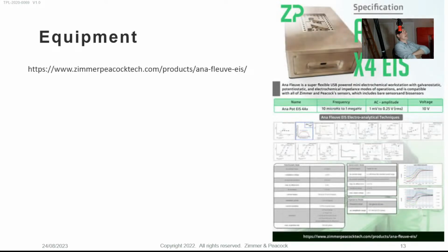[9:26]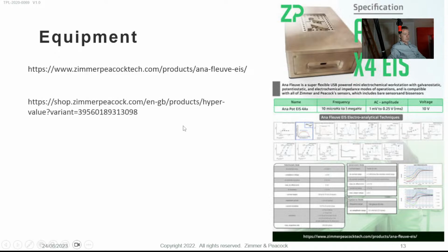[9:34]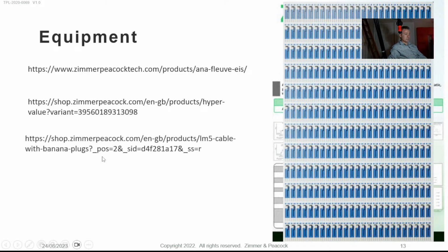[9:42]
In terms of equipment, you may need a potentiostat with EIS capability, electrochemical impedance spectroscopy. We just find EIS is super useful. You will need a sheet of these. This sheet is what we call perforated, so each electrode can be popped out. You will need a sheet of those. You will need a cable to go between the potentiostat.
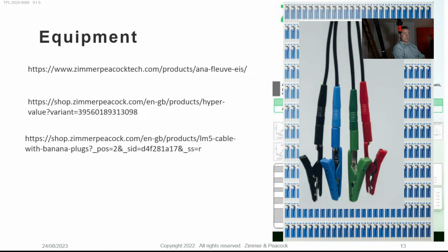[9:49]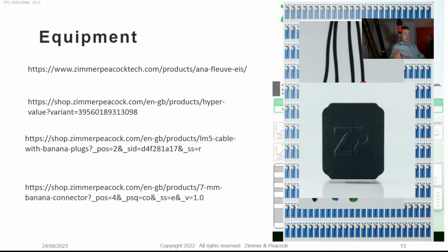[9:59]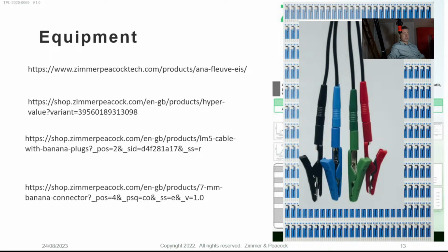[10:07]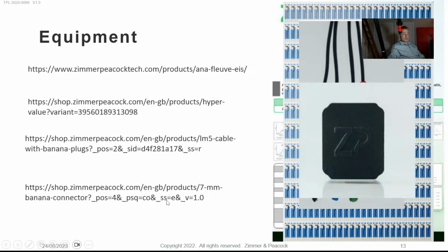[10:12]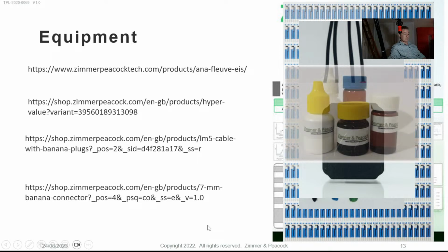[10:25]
This is what I've linked to, the cable that goes between that potentiostat, which is an EIS version, and you need a connector. If you're using ZP's potentiostats, our banana plugs have 2mm banana plugs, and therefore I've given you a link to a connector which has a 7mm slot, which will take our screen printed electrode with 2mm female banana plug orifices, so you can plug the cable into it. So that would be the kind of setup I'd recommend.
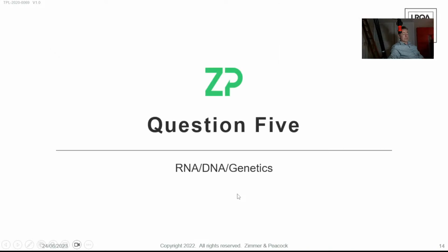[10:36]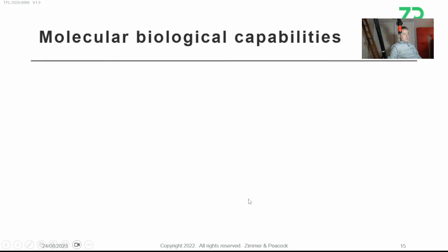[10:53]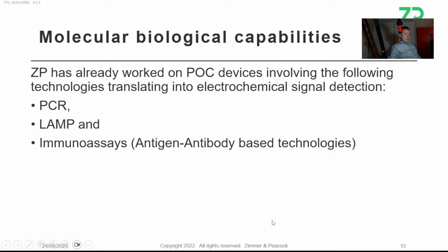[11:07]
Question number 5, right? So somebody wants to make a multiplex genetic assay, which may be RNA, DNA based. It's probably worth saying that at ZP we've done a lot of point of care development of these kind of molecular assays, and in the molecular assays there's often an amplification step, and that could be PCR, it could be LAMP. We've also done molecular biology using immunoassays as well. It doesn't always have to be genetic.
Let's say it was a bacteria like E. coli, or a pathogen or virus like SARS-CoV-2. It didn't always have to be genetic. You can also use immunoassays, and we have done that as well. We are equipped with a BSL-2 lab. This means we can handle things like E. coli, SARS-CoV-2. It means that we can't handle Ebola. That's a higher class than we have. So there are some pathogens we can't handle, but ZP is set up to be able to handle quite nasty pathogens.
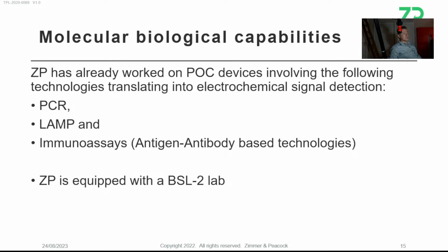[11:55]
I would say biology is more dangerous than chemistry. Biology is the world of viruses and bacteria. Not that E. coli is particularly dangerous. Whereas chemistry, it seems on the face of it dangerous, but as long as you take the right protections, you're generally okay. You're also okay if you take the right protections in biology. Anyway, that said, I need to move forward quite quickly.
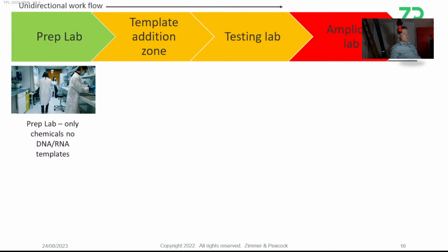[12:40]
So we're quite set up to do amplification and detection. Sometimes we don't actually do that amplification. We just detect the pathogen directly. And we also have the biosafety cabinets and a unidirectional workflow purposefully for this kind of work. So what do I mean by unidirectional workflow? It's not enough just to say I'm going to do an electrochemical molecular assay. You need to have, physically, a setup where we have a sequence of events going on in our lab as we do development.
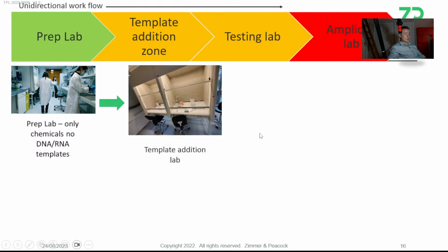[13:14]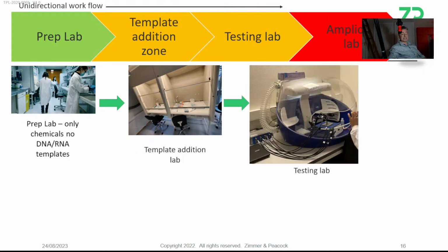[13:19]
Somebody is allowed to move forward along the workflow, but if they forget something, they can't go back. It's really important, because otherwise you're going to start carrying contamination back into the program. So we have a very strict unidirectional workflow through our labs, where we do the prepping, we do what's called a template addition, the testing, and then look at this testing. The testing is done in a clean room, but we have a class 5 bubble within a class 7 clean room. So it's super serious.
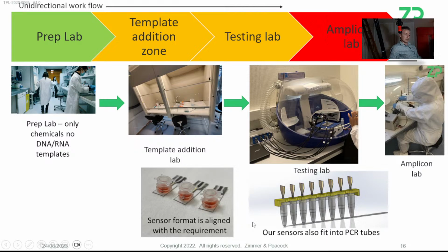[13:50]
And then we do the amplicon testing, and you can see that the person is very gowned up, and it's not just to protect them from, let's say, the assay. It's actually to protect the assay from them. So we don't want to interfere. One of the biggest sources of contamination when trying to make sense of molecular assays is the person themselves. They're full of genetic material.
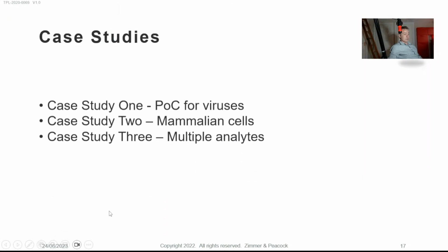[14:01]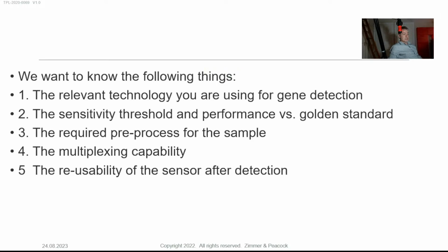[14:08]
At ZP, we've created electrochemical biosensors in many formats. These are just a couple of them. So we have done this quite a few times. We've done point of care for viruses, point of care for mammalian, and we've also done multi-analytes.
It's not just enough to say is it the RNA, DNA, are we going to do an immunoassay? We do have a quick look at the pathogen of interest. We do have the gold standards. Now, there's no such thing, to be frank with you, I'm absolutely sure of this. These gold standards in molecular are not so golden as people think. They're very time consuming. But we can look at an assay by fluorescence, and we can also look at an assay by electrochemistry. I think they stack up really quite well. If anything, when Abbott first came up with a SARS-CoV-2 test during the pandemic, I think it had an assay time of something like 60 minutes.
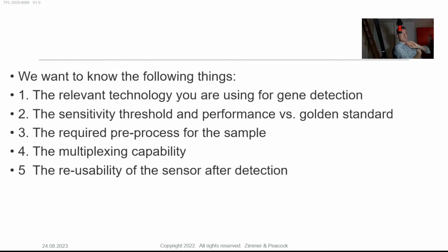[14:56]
We were doing similar work, and we were getting the assay time down, first of all from 30 minutes to 20 minutes, and then down to 10 minutes. So electrochemistry, because if you're doing an amplification, you're looking at the signal, and as the raw material is being amplified, the signal starts coming up exponentially. And people look for this critical time when they can call the signal. So we can do that in real time as well.
And so if you've got a high genetic load, then the assay time is shorter. When it's a small genetic load, the assay time is longer. But I think that fluorescence and electrochemistry stack up pretty well. The one thing about fluorescence is if you're going to make a point of care device out of it, you have a mechanical burden because you have to shield that entire assay from the ambient light. So I do prefer electrochemistry. If you have a biology background, you're used to fluorescence, you'll make a fluorescence point of care device. If you've got an electrochemistry background and you come from the world of low cost glucose strips, which we do, then we would obviously prefer electrochemistry.
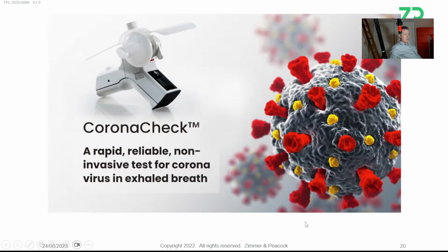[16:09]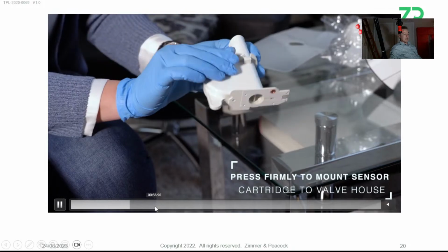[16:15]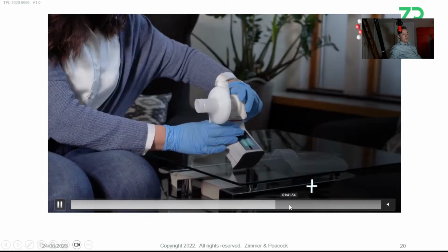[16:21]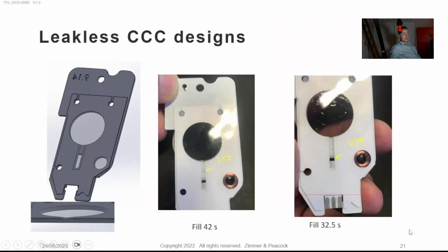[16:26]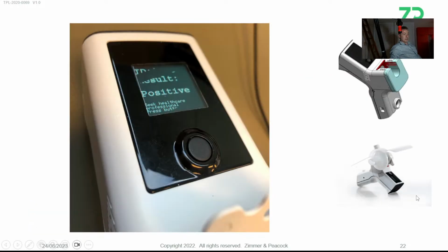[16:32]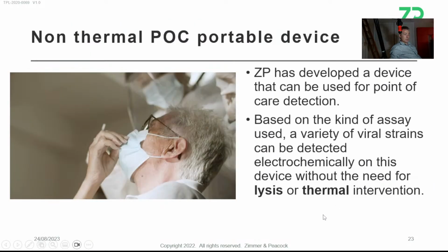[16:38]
If you're going to do a genetic assay, the molecular material is often within the cell, and depending on the target, it could be within the nucleus, but at least it's within the cell. So if you're going to go that route, you have to do lysis. That's what we do. We do lysis, we do amplification, then we do detection. What we try to avoid is lots of individual compartments. People talk about lab on a chip. Lab on a chip for me is a bit of a bad term because it suggests complicated workflows remain complicated and get reduced to microfluidics. No, if you're going to shrink it, you have to rethink it. And so we do end up coming up with simpler assays.
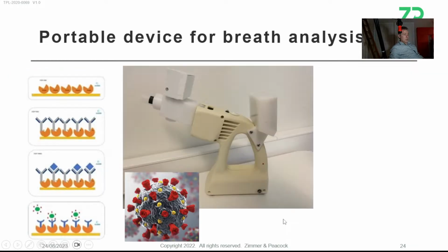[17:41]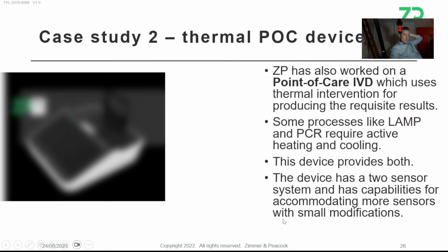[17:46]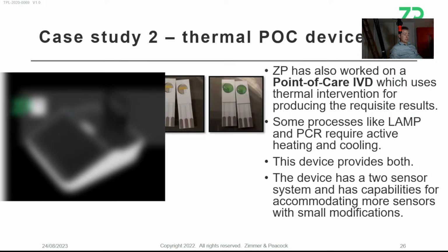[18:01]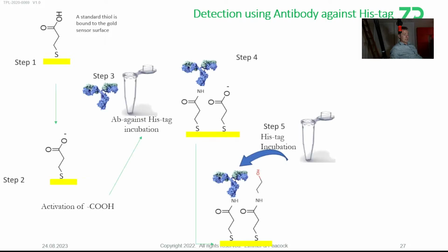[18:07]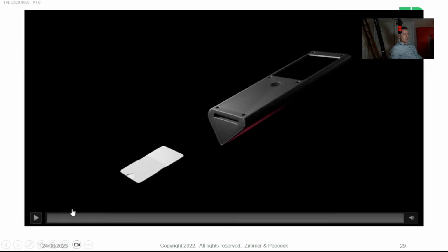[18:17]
This is the portable device for breath analysis. We also worked on mammalian samples; things like LAMP and PCR are assays that we do for amplification. This particular device, I blurred it out, but it did have temperature zones on it because we were doing thermal amplification of the molecular material before we were doing electrochemical detection on it. This was made for making an immunoassay, but we would use our gold electrodes to tether material onto the electrodes. We're very good at
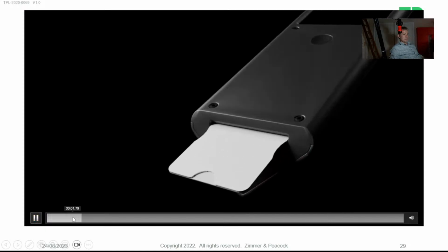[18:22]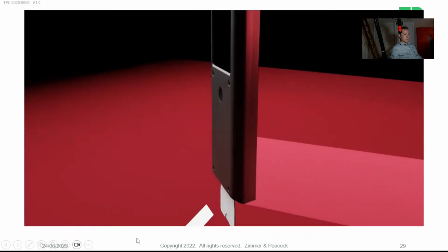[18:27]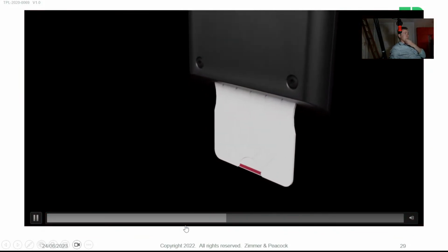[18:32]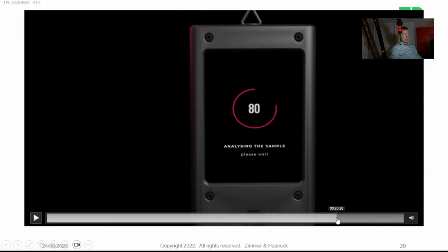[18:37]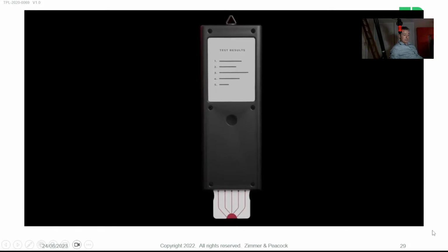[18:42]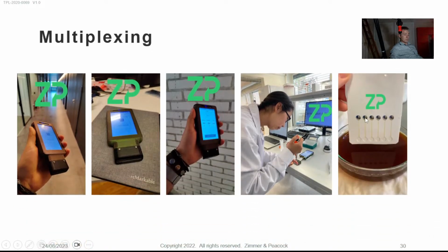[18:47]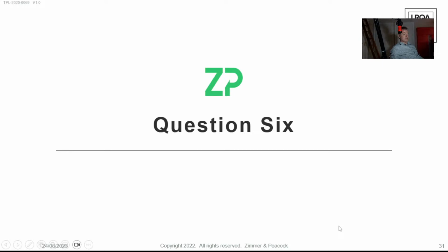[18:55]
doing multiple assays, and the manufacturing techniques that we impose are also very scalable. So if people want to detect multiple pathogens at the same time, we understand what you're talking about, and we do have experience of that. The previous one, we were doing 2 at the same time. If people want to do more, I'm sure it's within our toolkit. In fact, here we're trying to do a handheld device, you can see with 6 tests going on.
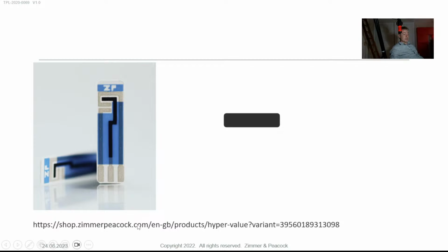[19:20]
Now, I'm sorry to jump questions a little bit. Somebody was asking, I want a carbon working electrode and a carbon counter electrode. I generally don't recommend it, and they're specifically asking about screen printed electrodes. With a screen printed electrode like this, sometimes people put a small drop on there. It might be 50 or 30 microliters, so it's a small drop. The way you set it up, and I have linked to the electrodes I recommend, you have a working electrode that's carbon. That's the thing that you're focused upon.
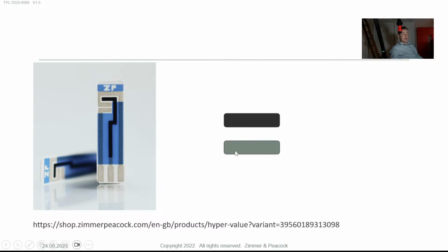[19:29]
You have another electrode in a different material set. The counter electrode is silver chloride. That means that if on that carbon electrode you are oxidizing something, on the counter electrode you're reducing silver chloride to silver, and silver's not a soluble product. If you were reducing at the carbon electrode, then that means you're oxidizing at the counter electrode, and silver's becoming silver chloride.
Again, silver chloride is not a soluble product. It's really important when working with screen printed electrodes and small solutions that you don't have a reaction happening on your counter electrode that's producing a solubilized material. Because what it'll end up doing is diffusing across your working electrodes.
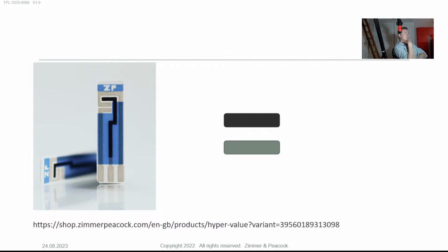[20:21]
So, for example, I've seen situations where the counter electrode was carbon or platinum, and it was producing hydrogen peroxide on the counter electrode because it was reducing oxygen. That oxygen was diffusing to the working electrode and effectively then being oxidized at the working electrode, which is then driving the counter electrode. So you have a chemical feedback due to the material on the counter electrodes.
So when you choose carbon, platinum, and gold, if I asked you what reaction is happening on the counter electrode, you may guess, but you don't really know. But when you make it definitely out of silver chloride, you absolutely do know what's going on at that counter electrode, and it's either the reduction of silver chloride to silver, which is insoluble, or the oxidation of silver to silver chloride, which is also insoluble. So we do it for a really specific reason. So really think carefully about going away from ZP's counter electrode being silver chloride.
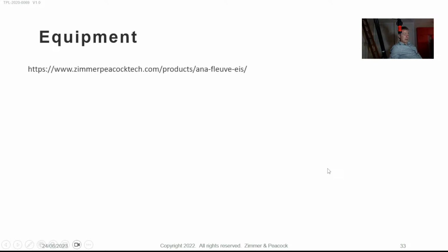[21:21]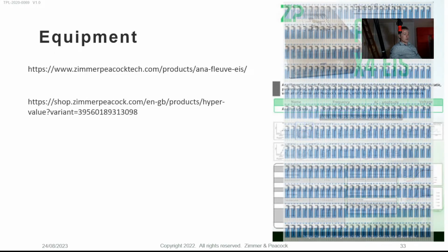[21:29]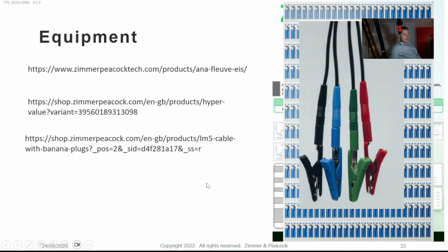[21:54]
Equipment. To use our electrodes, I recommend a potentiostat. It's the same list as earlier on. The nice thing about using the products that we have off the shelf is they're actually low cost and high quality. Once you start doing bespoke materials, you will end up with high cost, low quality, because you need volume in order to get high quality. And if it's just customized, then it doesn't really happen. They'll need a cable, they'll need a connector, and that's it.
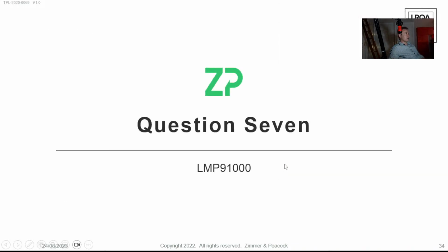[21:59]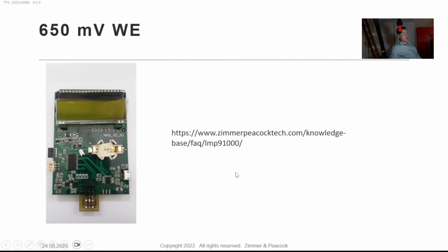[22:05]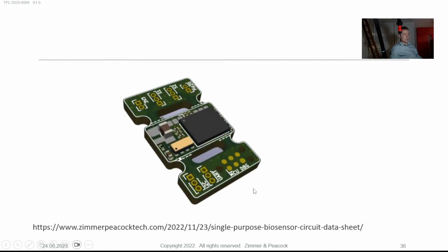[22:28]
Now the last question is, have we heard of the LMP 91000? We have. I put a link. I absolutely do not recommend this chipset. It will work for you, and you'll see on our website we've done plenty of work with it. I will not support this material on our website. I'll just tell you it's there. This material on our website is 6 to 8 years old. It's not a chipset that we use these days, but I just want to let you know it's there. If you find something useful, it's great. I just put the word 650 millivolts there. The voltage that you'll need to apply to the working electrode versus the reference electrode is 650 millivolts.
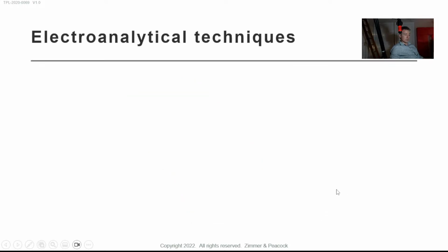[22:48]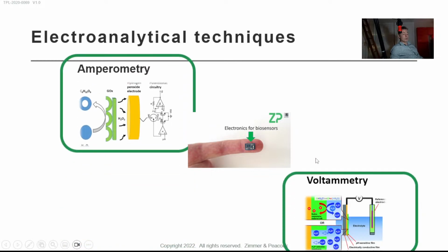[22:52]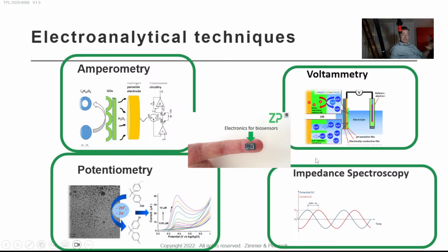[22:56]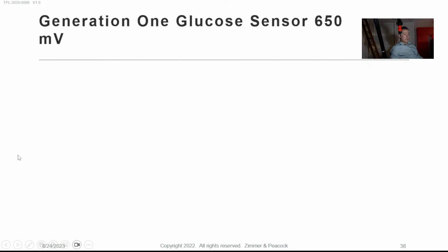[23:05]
If you're using a ZP Generation 1 sensor, honestly, save yourself some time. Just get this single purpose board. I've linked to it here, but it's your choice. Because this board, if you program it right, will do amperometry, voltammetry, potentiometry, and impedance spectroscopy. I did ask these guys to come to our workshop. I'm asking you again, come to the workshop. I do have 2 people coming from Australia. So people are coming across the globe. Again, 650 millivolts is the potential that you need to apply.
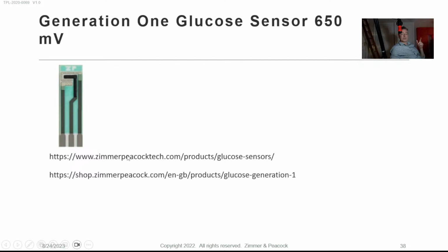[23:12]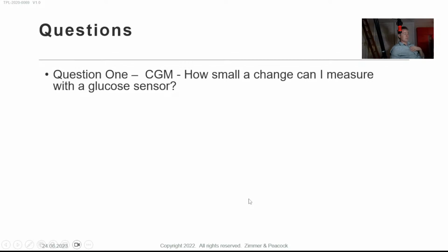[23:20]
I've linked to the glucose sensor twice because one of the links has data and the other link has the actual sensor I think you need to purchase. And I suppose I've just focused in on glucose just to say, just get going. Honestly, you'll outthink yourselves. Just get going. You're only going to essentially start learning. You've done so much research at this point. You're only going to learn by starting.
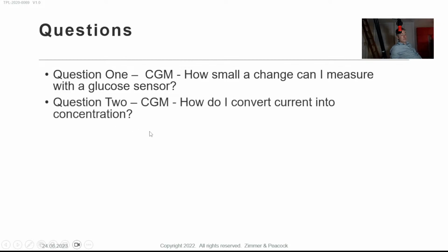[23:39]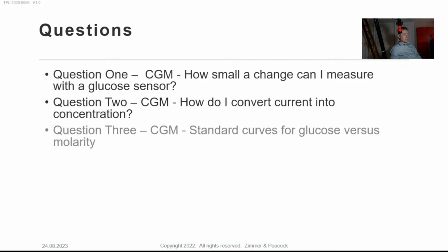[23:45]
So question number 1, I think the resolution you can get is 0.1 millimolar. How to convert current into concentration: I've given you some standard curves and shown you a simple linear regression procedure. Question number 4, right? So baseline yourself on a screen printed electrode, add this new novel material and show the improvement. That would be my suggestion.
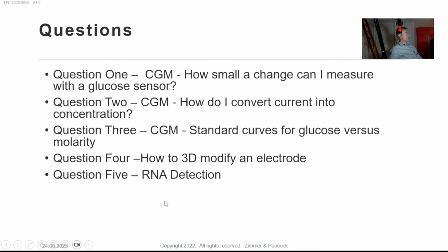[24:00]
For RNA detection, ZP is very experienced in it. How do we compare up against the gold standards? Well, don't forget, we're also not trying to compare ourselves against the gold standards. We're trying to make handheld point-of-care multi-analyte devices. There are no gold standards for it.
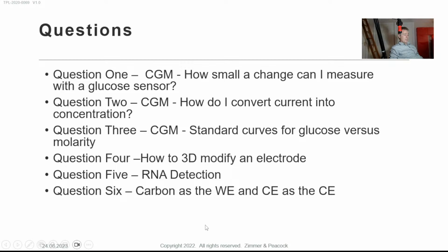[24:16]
Don't just change the counter electrode to carbon. We chose silver chloride for really strong reasons. And yes, at ZP, we've definitely heard of an LMP 91000. It's a fine potentiostat. It's not one that we use or recommend. I have given you some links to show you some old material that may help you. But the voltage you need is 650 millivolts.
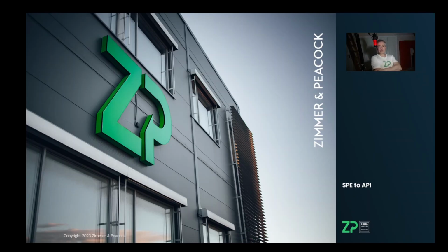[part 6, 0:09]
This is really a modern look for 2023, looking at SPE to API, screen printed electrodes to application program interface. And it's really, as I say, a modern look at how to take simply an idea, an electrochemical assay idea on a screen printed electrode, and how to turn that into a minimally viable product with an API. And an API is really your way of scaling and monetizing the ideas.
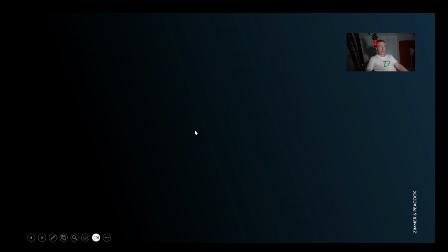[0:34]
So let me go forward very quickly and say that what we've done at ZP is really make a technology stack of really excellent electrodes, really excellent parallel potentiostats for the lab, and a really excellent Sense It All platform, which is what we call an OEM solution, which means that other people can use it in their products, and then actually have a database which has an API. So this technology stack has all the elements you need to go from results in the lab to hardware in the hands of either testers or actual customers.
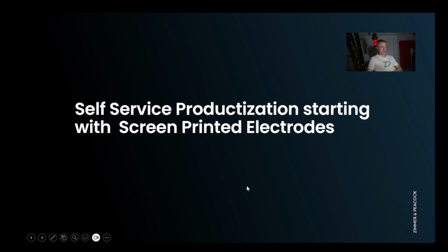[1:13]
So let me talk about this self-service productization, starting with screen printed electrodes. Electrochemical assays really are changing the world. They've been in development and maturing for at least 40 years. When we look at the electrochemical assay behind glucose sensors, for type 2 and type 1 diabetics, they've really paved the way. Electrochemical assays find themselves in environmental monitoring, healthcare applications, agriculture, food and beverage. You name it. There's something called Industry 4.0, where industry is recognizing that sensing is really going to be part of the next industrial revolution.
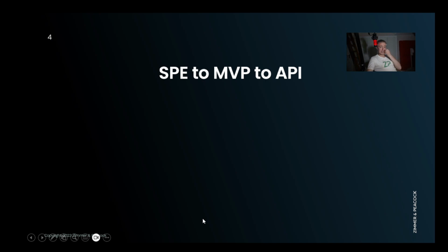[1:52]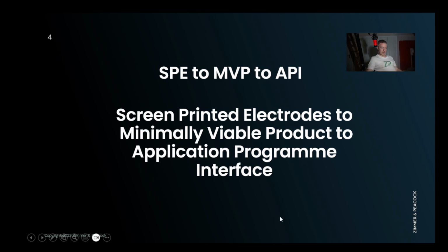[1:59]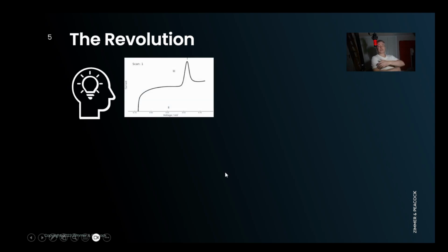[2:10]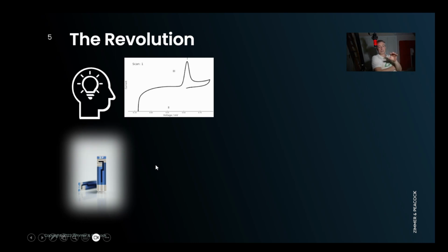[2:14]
So SPE to MVP to API: screen printed electrodes to minimally viable products to application program interface. And this is really what I'm going to discuss. The revolution that I want to touch upon is this sense that if you have an idea, if you're in academia, for example, you can come up with a new electrochemical assay, and I would recommend that you do it on a screen printed electrode. Even if you think you have to be on a gold or platinum electrode, I'd say have a serious reconsideration, because platinum and gold are spiraling in cost. They're never going to come down, but there are large sources of carbon and graphite around the world, and that means we can always keep the price of carbon electrodes down.
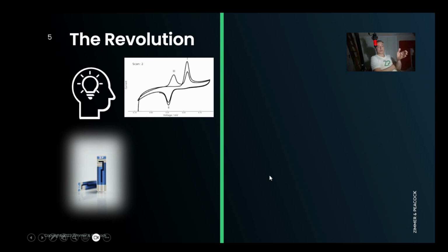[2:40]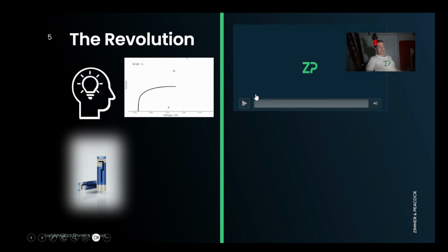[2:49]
So what I'm going to talk about here is how to step over this line from ideas and things that you may otherwise do in a lab and may otherwise just publish, and may even put into patents, but actually talk about how to turn them into products.
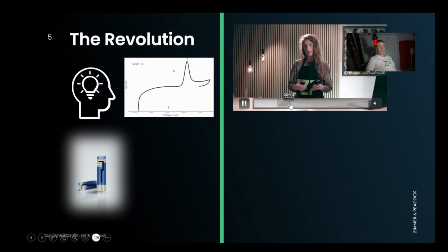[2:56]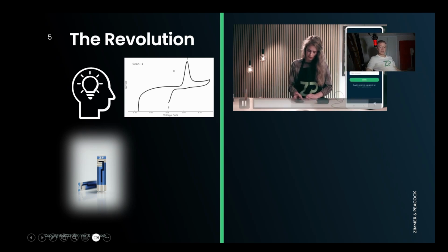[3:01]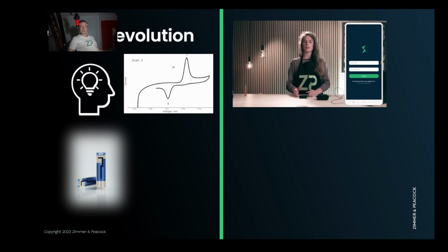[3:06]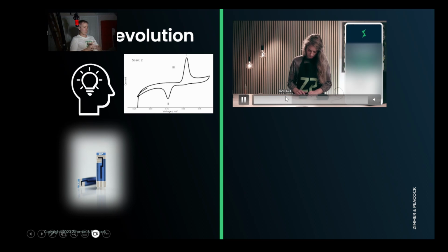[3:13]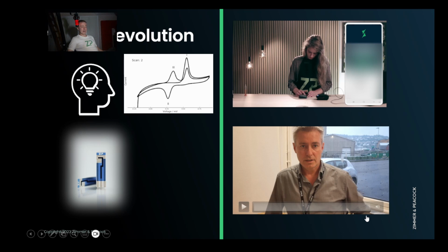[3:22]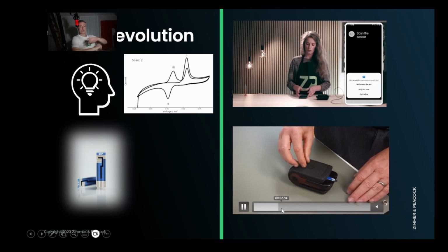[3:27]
So what we have running here is the Sense It All, and I'll try to remember to put a link underneath this video. This is the Sense It All platform, and it is really an OEM solution. OEM stands for Original Equipment Manufacturer, so essentially if ZP was manufacturing it, you would be using it in your product, and it would allow you to have a very tangible, nice looking piece of hardware that you're either giving to testers or actually using as your product.
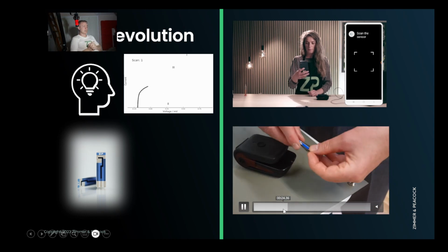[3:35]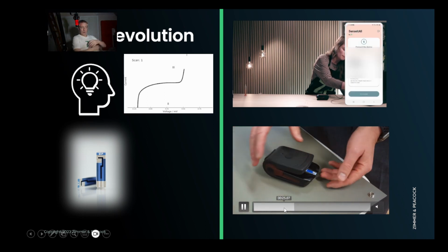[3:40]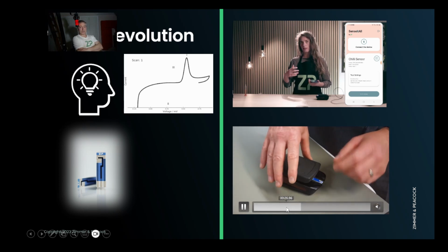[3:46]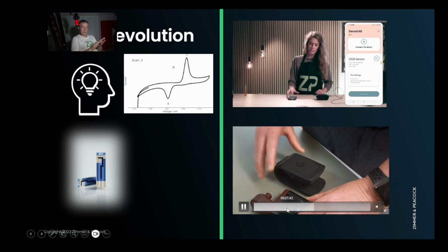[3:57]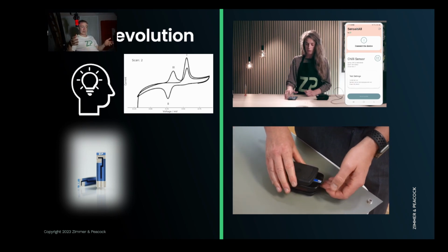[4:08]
Now, there are companies out there that make their potentiostats available to you as, let's say, equipment, but they look like potentiostats. Whereas with this, the design and engineering that's gone into it is much more of a consumer experience. With the coloring and the texturing, and the ease of use, this is much akin to an iPhone type application, in look, feel and quality.
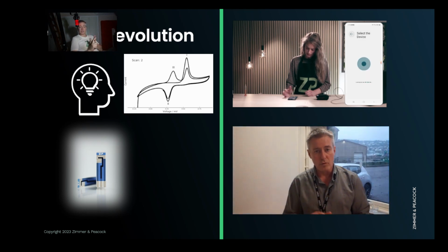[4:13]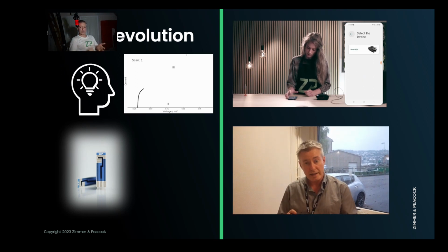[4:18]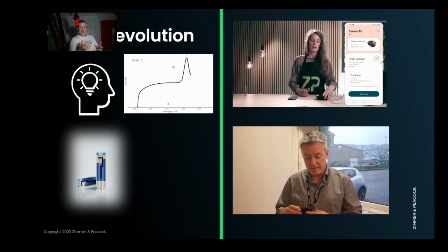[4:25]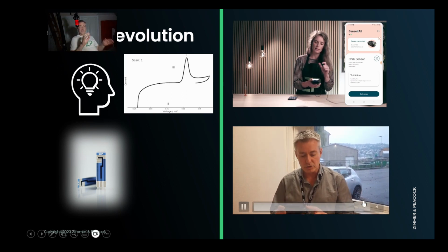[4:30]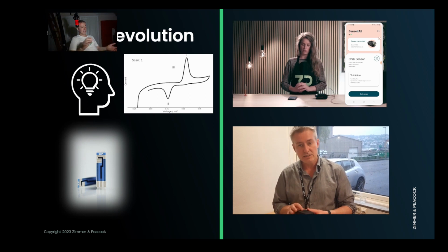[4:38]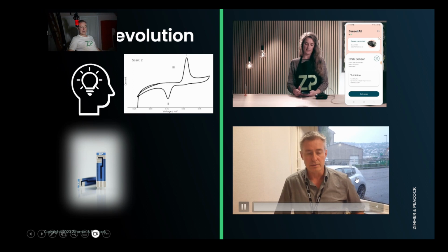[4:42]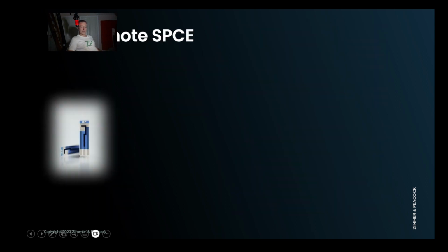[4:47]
So the rest of this video is about how to go from these ideas. As long as you tick the box that it's an electrochemical assay, be it potentiometric, amperometric, voltammetric, or impedance spectroscopy, and that you use screen printed electrodes, which have proven themselves to be great in applications like glucose sensors, then at ZP we do have a platform, a whole stack of technologies, to get you onto this Sense It All platform, and on your way to either an elegant solution to use with academic collaborators, or even a product to use with customers. So just a side note on screen printed electrodes.
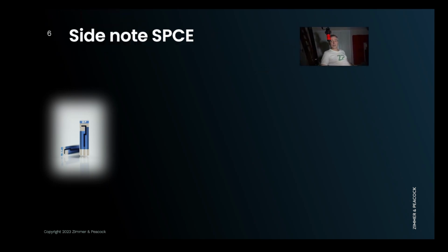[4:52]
And I put here SPCE, so I am talking now specifically about screen printed carbon electrodes. I already just said it, but please, please, please, if you can avoid gold and platinum, and actually you can avoid gold and platinum if you're doing self-assemble monolayers, where often gold electrodes are used. There are chemistries that will allow you to couple to carbon surfaces. I'm just thinking about pyrene NHS, for example.
There are always chemistries where you can, instead of using gold, use carbon/graphite. If you're using platinum, often people have peroxide type assays, or they may be using oxidase enzymes, and hydrogen peroxide is the end material of that. You can avoid platinum. You can use mediated. You can put a mediator down on the carbon, and the mediator will then allow the hydrogen peroxide to interact with the carbon electrode. So there are always ways. If you're not sure of this, then it's probably worth contacting essentially ZP.
What's the big problem with screen printed electrodes and screen printed carbon electrodes? The big problem is, and this doesn't apply to ZP screen printed electrodes, is reproducibility. And I should really change this and say irreproducibility. What I mean by that is, you will take two electrodes that otherwise look the same, test them with the same solution, and get vastly different answers. That's a real problem. Everyone knows it, but we're not changing the workflow. We just keep on reordering these things, or just complain about it. But that reproducibility is a real problem. I am going to say that ZP has overcome this reproducibility, and I'll give you some evidence of that on some other slides shortly.
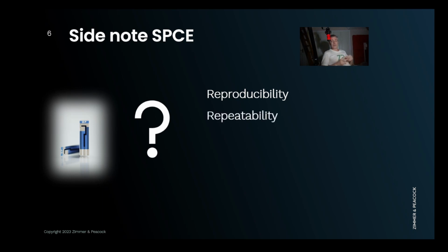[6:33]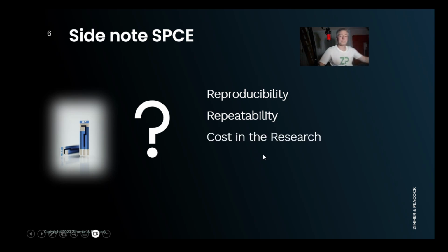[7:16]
Irreproducibility in the manufacturing of these screen printed electrodes, and even if you make them in-house, I think there's often an even worse situation, that you don't get reproducibility. It then leads you to terrible repeatability in the lab. Or terrible is overstating it. But sometimes you'll have to do like 5 tests in order to get 3 tests that make sense, because you think that 2 of the tests are outliers, and those 2 outliers you have a strong suspicion are actually down to the screen printed carbon electrodes. But of course, it's always a suspicion. At ZP, we don't have this problem. Why? Because we've got reproducible electrodes, and I would strongly drive you towards screen printed carbon electrodes. So we have good repeatability on our products and in our testing.
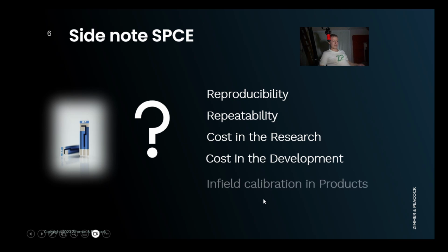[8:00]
I also want to say cost in the research. This reproducibility does cost you in your research. Now, those costs might be quite soft because actually, it's students' time. But you are wasting materials and you are wasting time if you have to repeat things because the underlying electrodes are not reproducible. This is even worse in the situation of development, where development often takes place in commercial organizations, where salaries are higher and you have to get to market. You have milestones, and I've seen this a lot, where basically people are held up because the screen printed electrodes are all over the place. So cost in development is a problem.
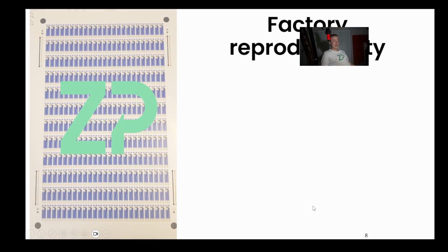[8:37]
Now, what happens then is that because people are getting these irreproducible electrodes, they then end up introducing calibration in the field. If you've got a product that's on its way to market and you've got calibration in the field, where the end user or some complicated cartridge has a calibration routine associated with it, that's a problem. You shouldn't be there, and it's probably there because the underlying screen printed electrodes are actually not reproducible enough. If you recognize any of this, I strongly suggest coming over to ZP's screen printed carbon electrodes, especially our hypervalued carbon electrodes.
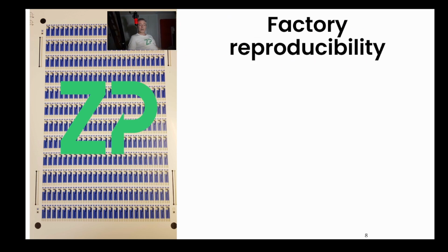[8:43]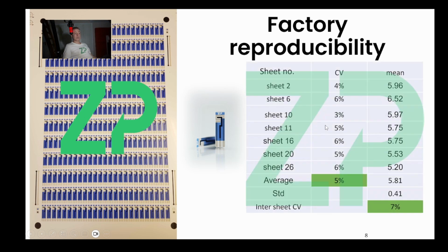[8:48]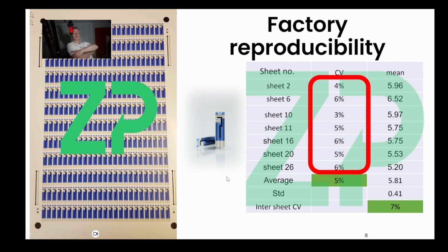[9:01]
Now, factory reproducibility. So at ZP, we're really careful on the reproducibility of our electrodes. Why? Because we use them all the time ourselves in our own products. So we would take sheets, and here I'm talking about quite a short run of something like 26 sheets. So that's about 7,800 electrodes for us. And we'll take sheets through the run, and we'll actually check them for variation, the coefficient of variation. And make sure that within a sheet, we get something like a 4, or let's say a 6% variation. So we're keeping an eye on making sure these electrodes are reproducible enough that we can benefit from them.
And by the way, we also then make them available to the academic community and also the development community. And then we just check the average standard deviation, the average coefficient of variation. And we also then check the sheets relative to one another. So we do an intra check and an inter check, and just make sure that the entire batch is actually reproducible. So this whole video is really about commercializing electrochemical assays which are using screen printed electrodes, and I'm talking about a technology stack, and the bottom of the technology stack is actually getting reproducible electrodes.
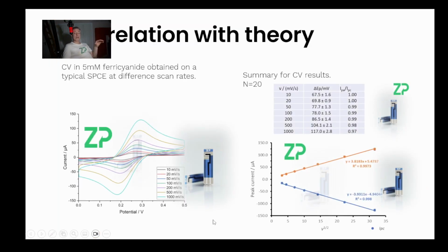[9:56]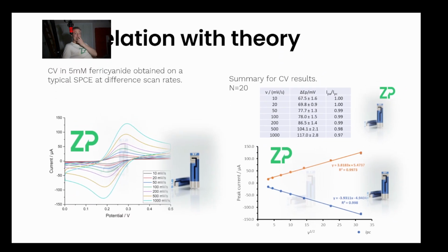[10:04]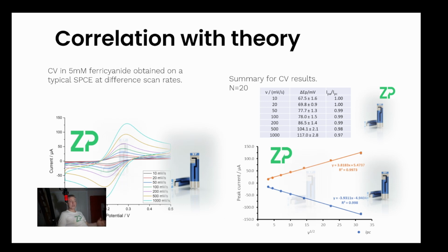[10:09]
By the way, our electrodes do actually correlate with theory, but I think this distracts people. We do get people who come quite a bit and say, oh, well, do you match with theory? Yeah, sure, we can match with theory. But by the way, if you're really trying to make a commercial product, whether you have a peak to peak separation of 59 millivolts when testing with something like 5 millimolar ferricyanide, it's interesting and it tells you something about the electrodes, but it's not the thing that's actually stopping you getting to market.
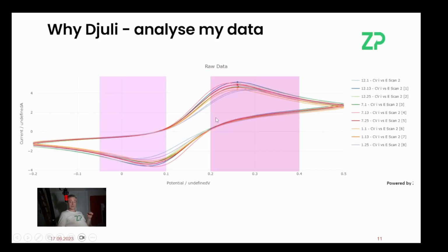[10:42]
So here, when we do a nice slow scan rate, we get something like 67.5 millivolts per second. But what we're really focused on at ZP is the reproducibility of these electrodes. So we have something called Djuli. It's an online database. We test the electrodes.
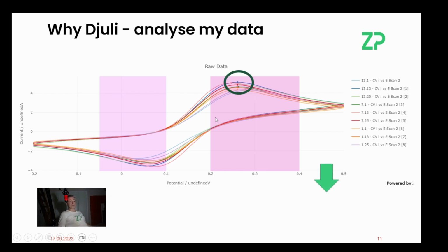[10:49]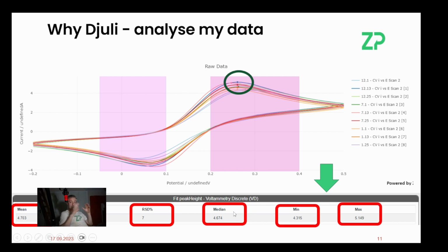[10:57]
We test something like their peak height, and then we can look at their mean, the standard deviation, the relative standard deviation, which some people call coefficient of variation, the median, the min, the max. So we've essentially done these what we call KPIs, key performance indicators, and basically checked the batch and given it an approval or failure.
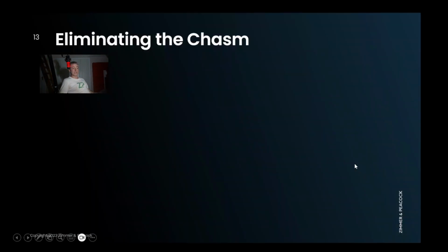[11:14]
Why do we do this? Because we use these electrodes, and this also forms the basis of a technology stack that we think you can use in your product or going to market. What we're actually doing at ZP is eliminating something that we call the chasm. So the chasm is recognized in academia between what academia does and what
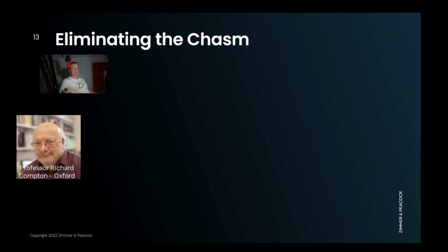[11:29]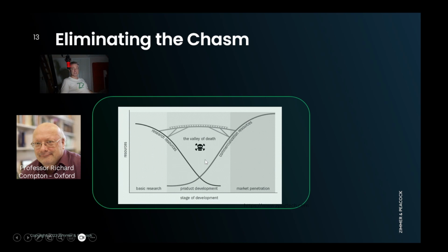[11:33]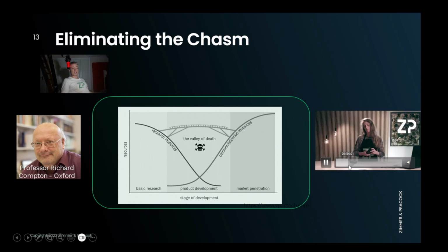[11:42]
commercialization. So this is Professor Richard Compton. We have licensed technology from his group, and Richard would be on one side, and then we would have something like a product on the other side. And this is one of the products that we have licensed from Richard. We use it for testing the hotness of chili.
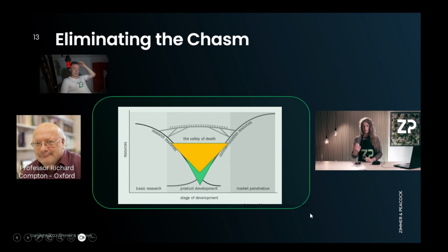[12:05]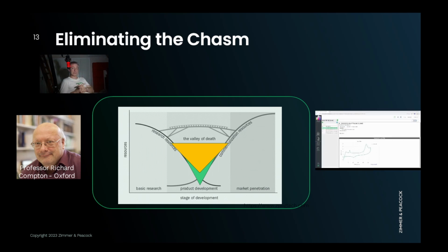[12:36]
But this chasm exists, and what we've been doing at ZP is filling in the chasm with a series of technologies. First of all, repeatable electrodes. If you've got repeatable electrodes, you've got the foundations of a commercially viable assay. The next thing that we're filling in is our EMA potentiostat, because our EMA potentiostat allows us to do a lot of parallel testing, which really speeds up the effort, puts statistically significant numbers behind us, and importantly, the method files are then compatible with something called Julie, and Julie is compatible with something called Sense It All. This is how we go from screen printed electrode through the potentiostat into the cloud and onto a platform called Sense It All, which is actually the OEM solution, and OEM in this context means original equipment manufacturer.
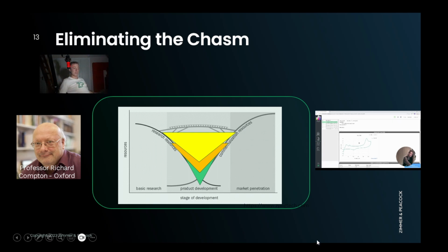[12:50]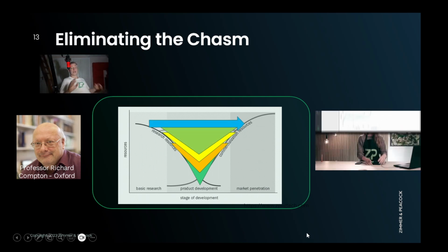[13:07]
So screen printed electrodes, we partly fill in this chasm with that. Potentiostats are equipment people would have anyway as part of their research phase, but we've made it so that it actually expands across the gap. The next part is the actual Sense It All platform, which is really a piece of hardware that can receive the files from Julie, the method files that you'd use in the lab, get translated across to the Sense It All platform, and then the last bit, I should have gone a bit slow on that, was an API.
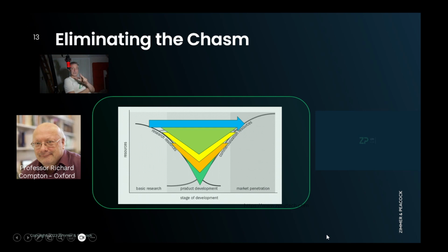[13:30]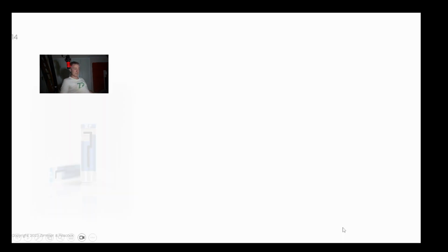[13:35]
So we've built an API into this. An API is an application program interface. If you're not aware of it, then come to one of our workshops, where we will talk about how to monetize your API. You should always have an API strategy these days. This is really the pieces of code that mean that we can pay for things online. You can buy tickets online. Everything is essentially held together these days by APIs.
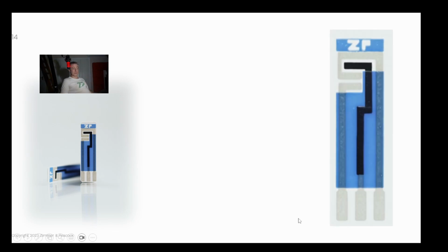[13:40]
So the first part of this is screen printed electrodes. We make a really reproducible one. You may be able to use those screen printed electrodes just in your electrochemical assay. It's always good to keep it simple, but you may also have to functionalize them with some nanomaterials and polymers, something that you want to actually do to the electrode, and the electrode itself might be just a current collector. So you can characterize that. You can functionalize that. Now the problem is that this functionalization that you're just about to do is probably your biggest route of irreproducibility. At ZP we would use robots. If you're not set up for it, then you will have to use a contract manufacturing organization like ZP to actually do that.
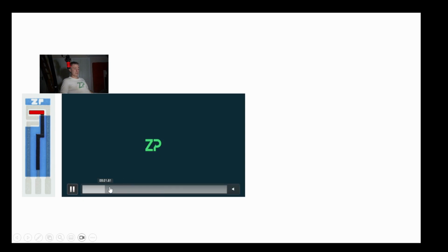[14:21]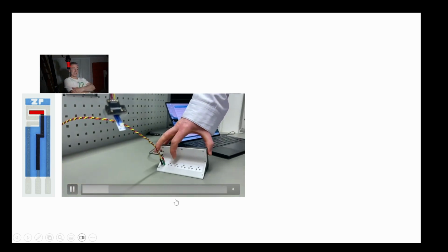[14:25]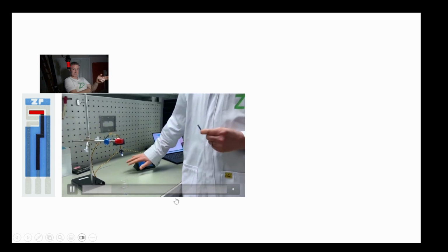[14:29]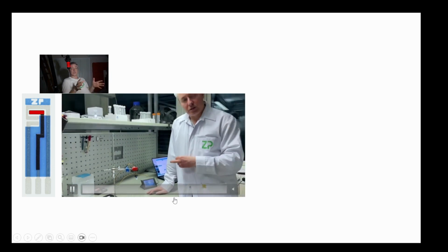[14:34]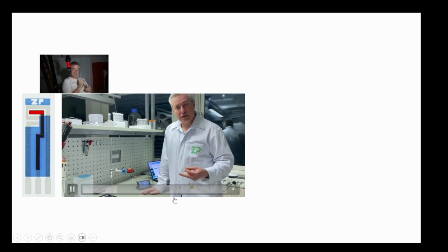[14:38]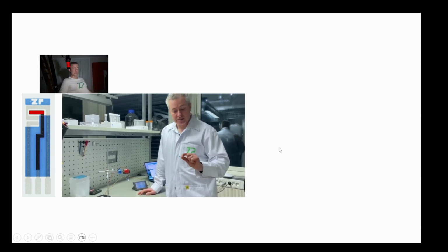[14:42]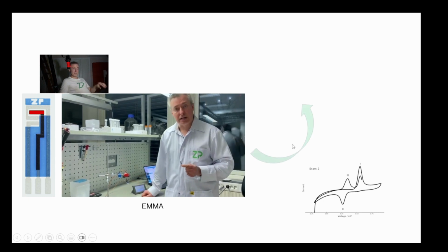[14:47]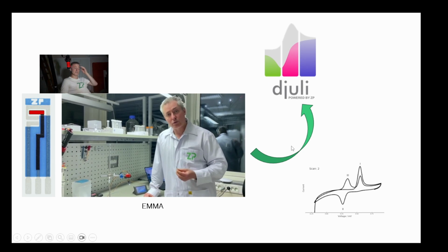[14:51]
So the next part of this really is EMMA. This is EMMA. It's a 6-channel potentiostat. It's particularly set up for electrochemical assay development, and the fact that it's small is nice. The fact that it can run 6 tests at the same time is really important because you need to get statistical data on this. And EMMA is elegant because you can develop your method on that, and those method files are all the time getting saved into djuli.
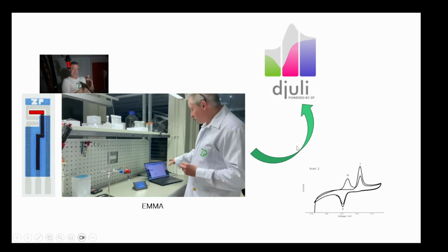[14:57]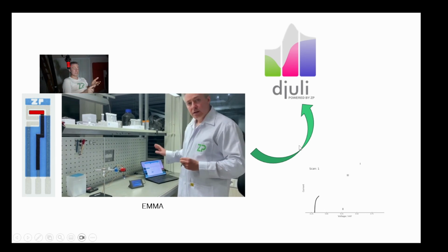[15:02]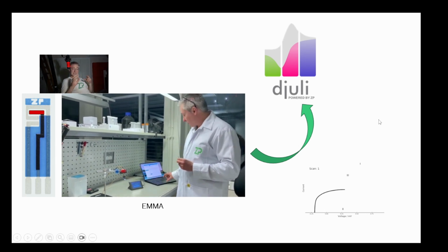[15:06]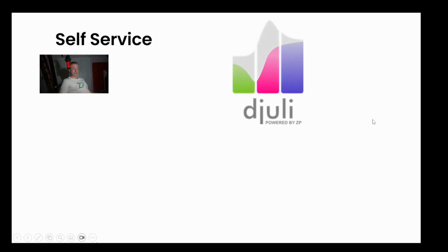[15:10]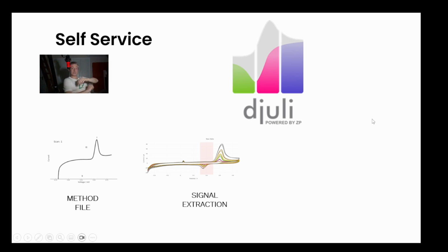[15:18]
djuli is a cloud database system, so ZP has this sensor test cloud workflow. So now that you know where your data is, you know where your method files are. And djuli is really the start of a self-service on your way to productization. So what I mean by that is, you develop the method files in the lab. The method files go up to djuli. In djuli, you come up with a signal extraction routine.
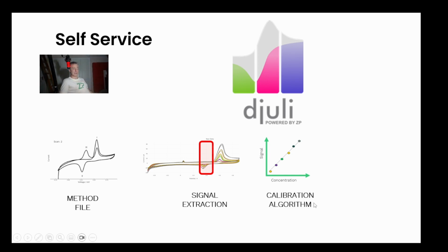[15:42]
So what I mean by that is you will have a method file and you'll run that method with different concentrations of the analyte or different properties that you want to measure. And you will devise a signal extraction routine in djuli. And then djuli will come up with, or you will come up using djuli, a calibration routine or a calibration algorithm. So method file is what you're doing in the lab. Signal extraction is when you're basically doing your data science in the cloud using the tools that we already have, and the calibration algorithm will also come out of the cloud that we also have.
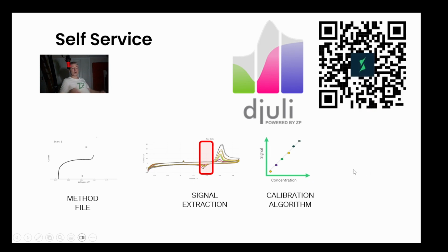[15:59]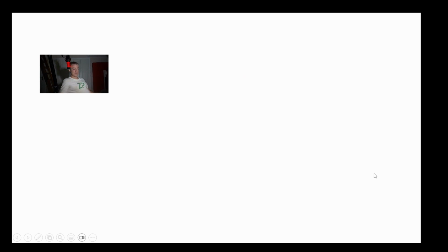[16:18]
What does djuli then allow you to do? It allows you to generate a QR code. And this QR code is essentially all the work that you've done wrapped up. And this is the heart of us actually turning what you did in the lab across to the Sense It All platform. And then you're on your way to this minimally viable product or even product. So the QR code works with an app that's called Sense It All. Sense It All, the app, will actually read the QR code, and anything that you've developed gets carried into the QR code and gets put into the app.
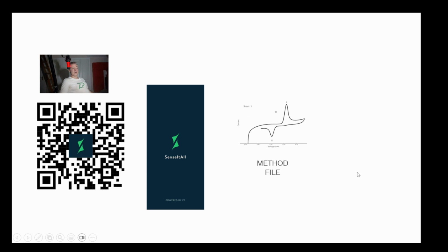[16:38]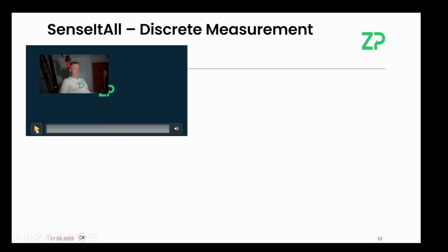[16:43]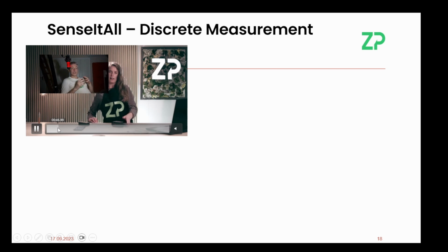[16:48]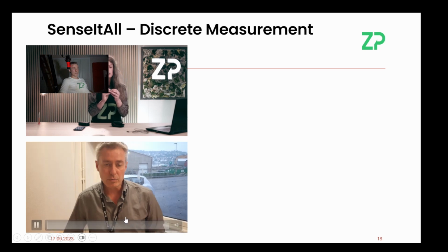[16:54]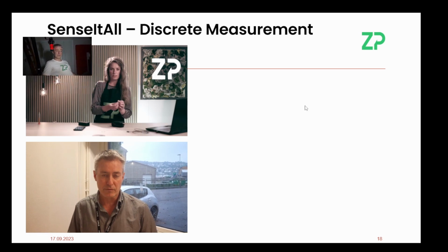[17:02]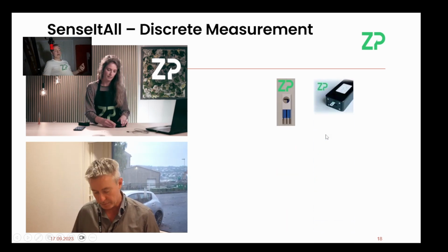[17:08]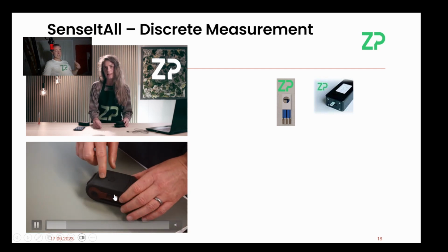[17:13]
So that will bring your method file across, and then your method file will get used in the following workflow. The workflow that I'll show you here is you will take something like a sensor, and the engineer is holding the sensor in her hand. So this is the sensor. We have hardware, but the hardware has got a lot more elegant these days. In fact, there's the hardware now. You can see my hand upon that. Really quite nice. It clicks in, it clicks out.
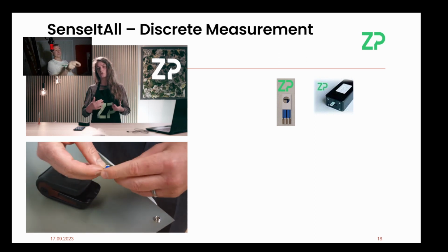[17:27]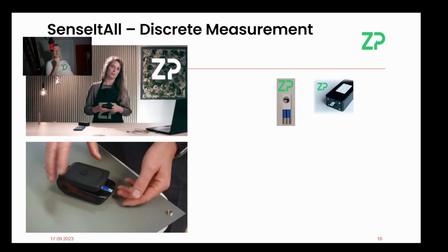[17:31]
And that's really important because at the moment people are using instruments where they're slotting this thing into the front. And by the way, those connections soon wear out on those slotting ideas. And also it's very easy to get liquid into the connections, so that's an absolute disaster. So this one, you'll just see it clicks around really elegantly.
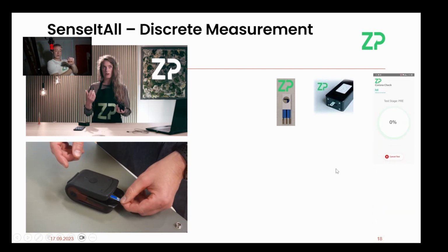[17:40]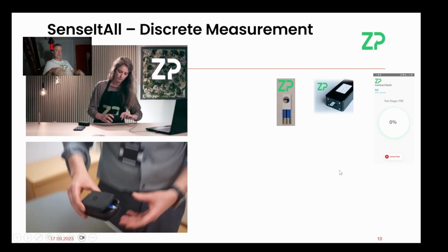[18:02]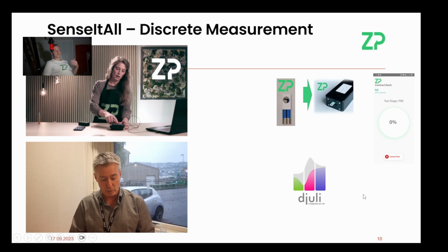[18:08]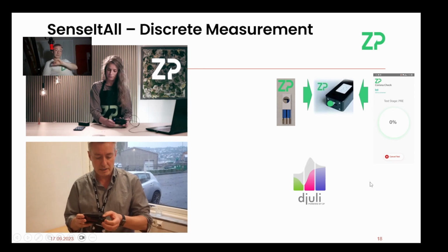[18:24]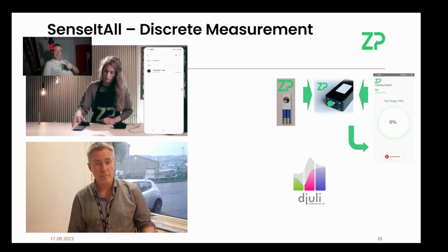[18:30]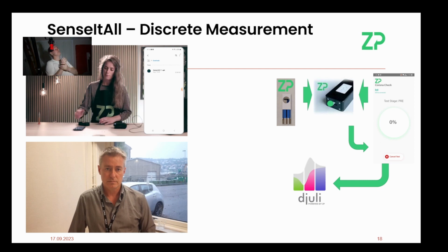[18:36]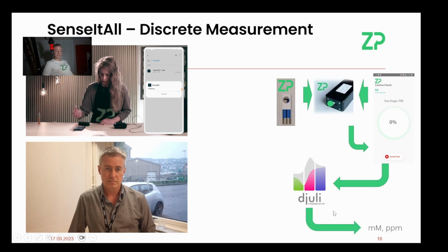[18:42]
The hardware is told what to do, because you programmed the app using the QR code that you generated in djuli. The app runs the meter, the meter gives the data back to the app, and the app sends the data to djuli, where the signal extraction and the calibration routine that you developed turns that into a concentration, and the person will get the result on their phone. So you really have now given them a user experience. And when you watch videos from ZP, you're going to find out that we're not showing voltammetry on our SenseItAll platform. That might be what's happening in the background, but you're certainly not showing that to the end user. And so it gives them a really nice experience.
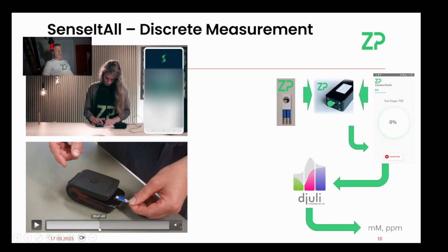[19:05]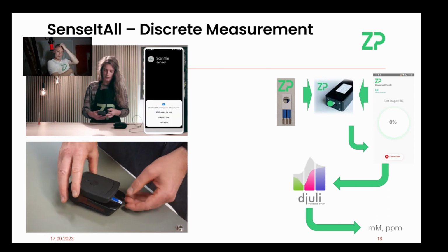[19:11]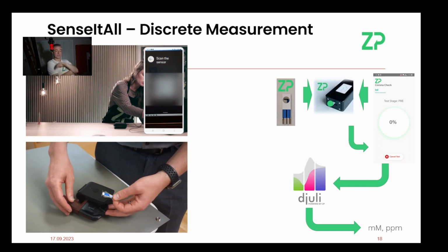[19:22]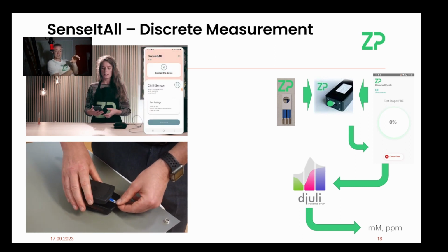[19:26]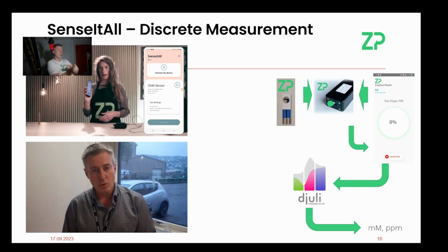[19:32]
So what this stack of technologies is doing is saying, stay what you're doing. If you develop electrochemical assays or electrochemical sensors or electrochemical biosensors, stay what you're doing. Just move on to some of the screen printed electrodes from ZP. Hopefully choose the carbon ones, because commercially these are going to be the easiest one for you. Use the EMMA potentiostat from ZP, because that then integrates with djuli. So you can do nice parallel work in the lab, which is efficient on your time.
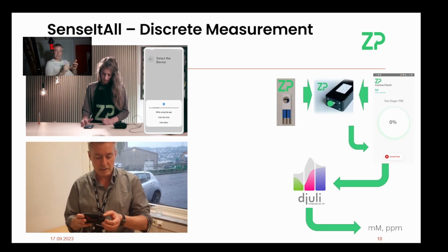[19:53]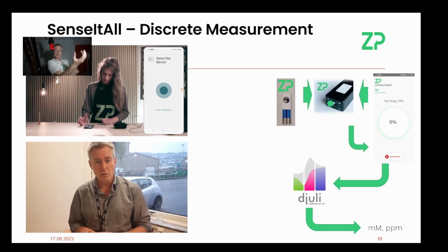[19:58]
The method files then go to djuli. When you're in djuli and you're analyzing your data using the data science tools that we have there, you'll end up with a signal extraction routine and you'll end up with a calibration routine. Those 3 files, the method, the signal extraction, and the calibration routine, can then be condensed down to a QR code. And then there's a Sense It All platform which will read that QR code, take on board all the stuff that you've essentially developed, and then it's essentially good to go. The Sense It All app will tell the meter what to do.
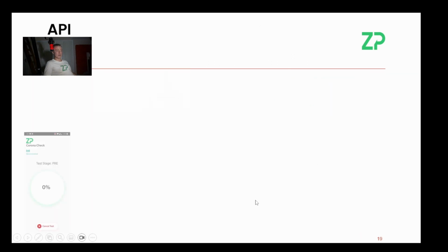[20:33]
You'll tell the user, put the sensor into the meter, put the sample on the meter, run the app. The app will run the method file. The meter will give the data back to the app. The app loads it to Julie. Julie will put it through the signal extraction routine and the algorithm routine, and then give the app back the number. And you actually get the raw data as well, so it really helps you keep an eye on what's actually going on.
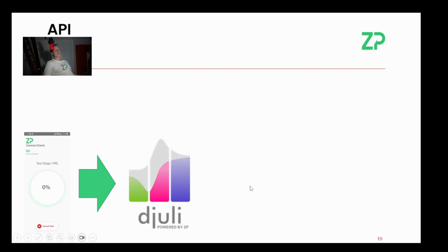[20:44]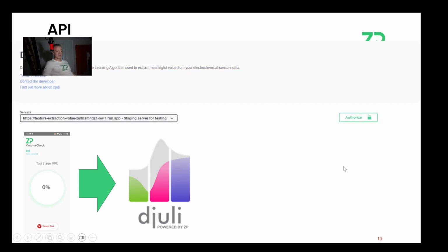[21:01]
Now, I also said there's an API on this as well. So Djuli, this cloud database that we have at ZP, is proprietary, something that we developed ourselves. It does have an API, an application program interface. I know I've said it already, but all banking, all online commerce, all booking of tickets, probably even government subsidies, everything is stuck together these days through API. So we do have an API built into Djuli.
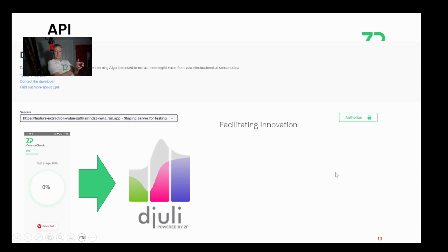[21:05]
And this is really useful because it facilitates innovation. If you're working with other parties, they can bring data that your sensor may have otherwise developed into their cloud system, and you can charge them on the API, which allows for monetization. It also gives you an ecosystem for growth. Other people may be able to use your hardware and sensor technology in their application, and therefore you can plug into their ecosystem. This can give you a cost reduction, because if other people are using your technology and putting it into their business models, that really saves you on sales and marketing.
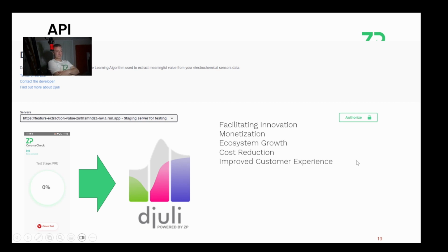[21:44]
It improves customer experience. For example, if you develop a sensor and you're serving up the data in your own language, then people in other countries can get hold of the data and put it in a way that is acceptable to the local market, improving the customer experience. It allows for data access and analysis, so other people can bring your data in and do data fusion, mixing your data with theirs and adding value to it. This allows global expansion into markets that you would otherwise find quite hard to address. If other people can build their business upon your technology, then eventually you all benefit from it.
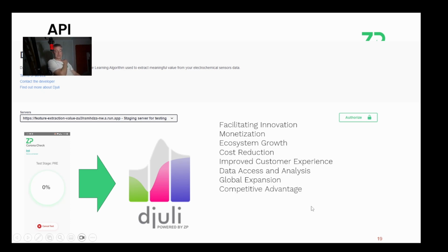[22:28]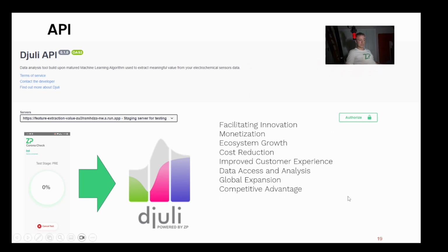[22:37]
This is definitely a competitive advantage. Building an API in from the very start with your business ideas is a competitive advantage. This is the way modern business runs, and it also allows rapid development. And also, importantly, it gives you scalability. If you make your platform more available for others to use in their technologies, then you have a much more scalable product, and that really comes into interoperability. API is really important for interoperability. You want to be able to plug into the modern world, so you should have an API.
So I started this conversation by saying that if your idea is to use electrochemical analysis along with screen printed electrodes, then the ZP technology stack will take you from SPE, screen printed electrode, to MVP, minimally viable product, to API, and this is that API part. Now the SPE is our screen printed electrodes. They're available. Hypervalue carbon electrode, I can't recommend it more. We use it all the time, and it's highly reproducible. High reproducibility from us gives you great repeatability in the lab.
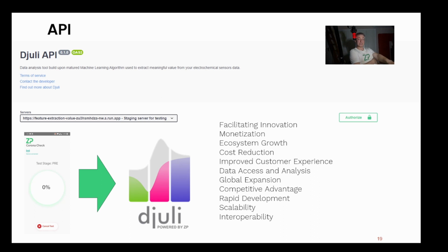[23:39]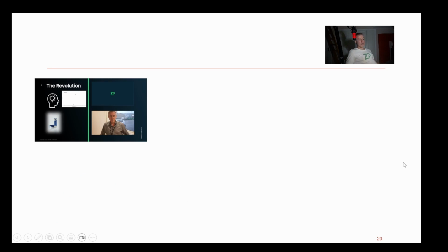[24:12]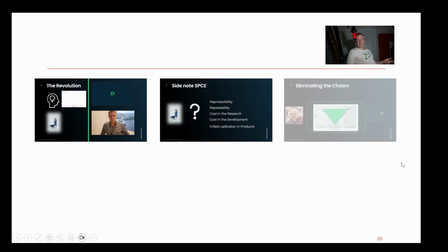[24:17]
The next part you then need is to actually get enough data to make your assay robust enough. How do you do that? Use the EMA potentiostat. A, it's got 6 channels on it, and B, the method files will feed into Djuli, and then Djuli will start turning your lab work, condensing it into a QR code, which will then be read by the Sense It All app and will allow you to use the Sense It All platform as a friendly customer-facing solution, and not give people a horrible, clunky potentiostat experience. And so the revolution is we can quickly turn ideas into tangible products. I would always recommend these carbon electrodes.
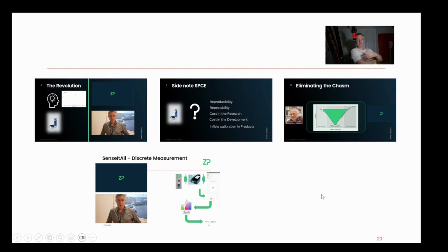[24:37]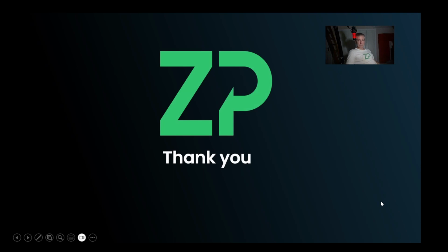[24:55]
We're essentially eliminating the chasm between ideas and commercialization. A lot of what I've spoken about is just doing what you're already doing, but on a platform that's intended to get you from idea in lab to actual product on the market. If you come into this, then we'll be able to get you onto the Sense It All platform, and I think then you're on your way to commercialization, and it's already got an API built into it, so you've already got scalability and interoperability plugged into it.
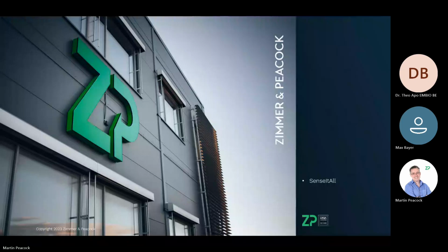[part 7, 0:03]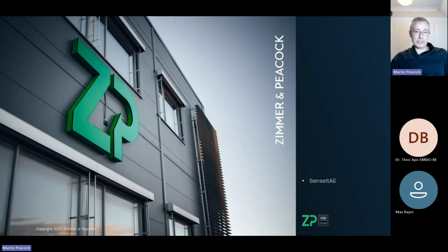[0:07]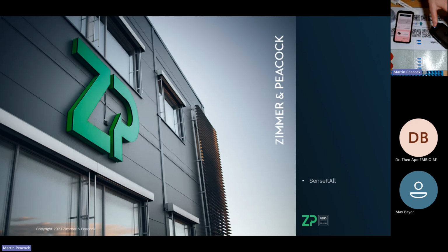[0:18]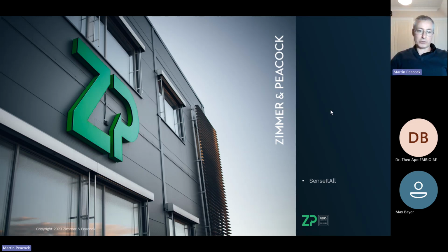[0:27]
So this webinar is not going to be all about talk. In fact, I do have some hardware in front of me, so I will be doing a live demo, and I'm actually going to do it slightly unusually. So I'm sort of sharing my screen with you at the moment. I'll just go back to that main monitor and say we are going to talk about Sense It All.
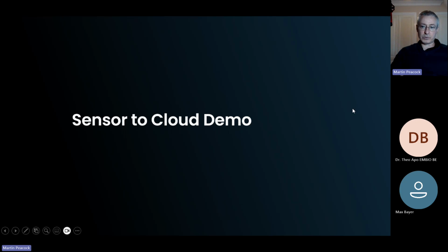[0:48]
I'm going to talk about our vision at ZP to really accelerate the development of assays and get them onto the market. I think too many people spend too long trying things out and not necessarily everything getting to the market, and that's the problem that we're going to try and solve. With this slide, I'm basically just immediately saying, okay, rather than talking about this, I might just jump straight into a demonstration now. So what I'll do is I'll change my screen to
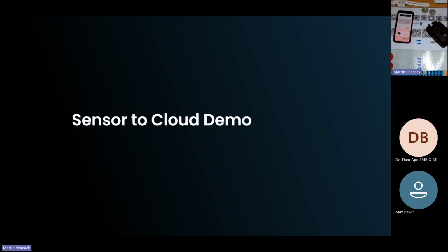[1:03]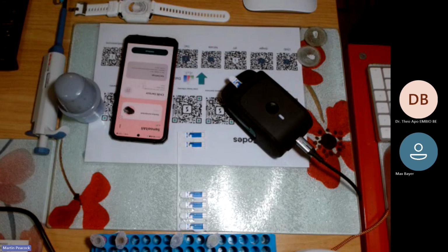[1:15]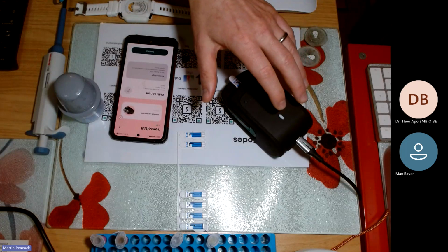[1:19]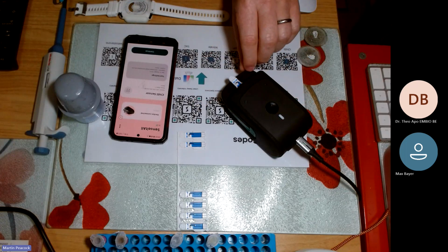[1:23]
my desk in front of me. I'll show you what we're talking about, and then maybe I'll talk in more detail about the system. But I think seeing is probably one of the best ways of, let's say, understanding. So with that said, I've stopped sharing my screen. You can hopefully now see my main screen here, and I will basically do a quick demonstration.
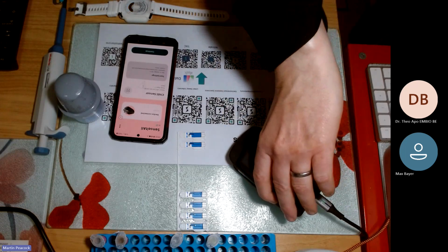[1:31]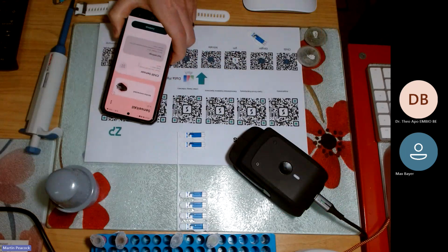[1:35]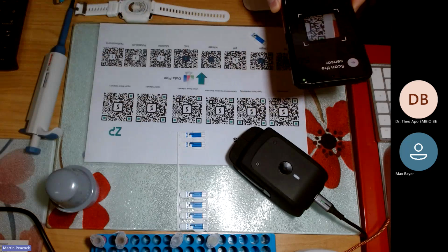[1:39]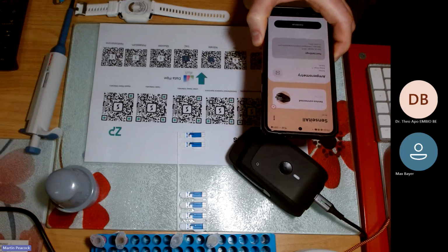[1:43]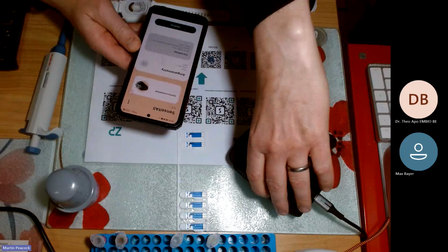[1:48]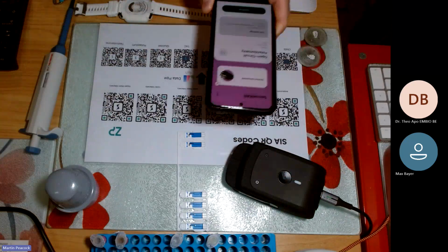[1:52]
So this is the Sense It All. The Sense It All can either be a research instrument. By a research instrument, I've got these QR codes in front of me. I'll explain the whole app situation shortly, but different QR codes allow me to change the target of what this essentially is, a potentiostat. So it can act as a scientific instrument, or it can act as an actual product.
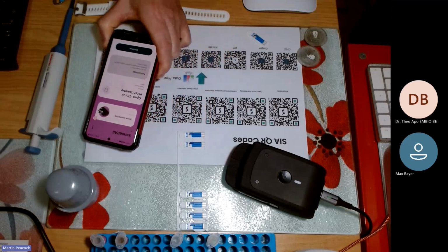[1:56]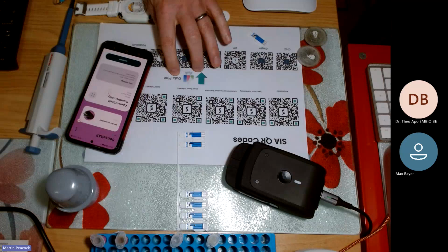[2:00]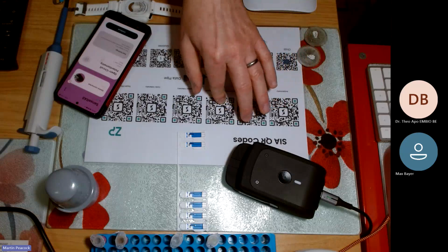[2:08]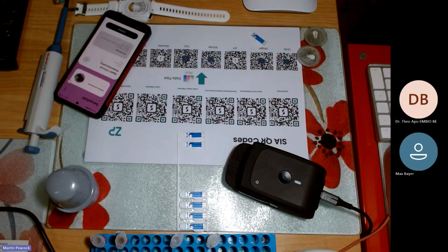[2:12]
Now, the reason it can act as an actual product is that it's synchronized with the cloud, and in the cloud we have something called a data pipe. A data pipe will allow us to take raw signal from techniques like amperometry, open circuit potentiometry, impedance spectroscopy, linear sweep, cyclic voltammetry, square wave voltammetry. It allows us to take those, put them through a data pipe, which I'll show you, and then turn it into something like chili, ginger, pH, nitrate, total antioxidative capacity, glucose, potassium, testosterone.
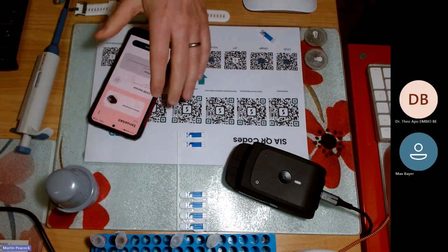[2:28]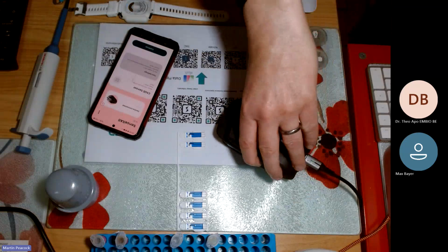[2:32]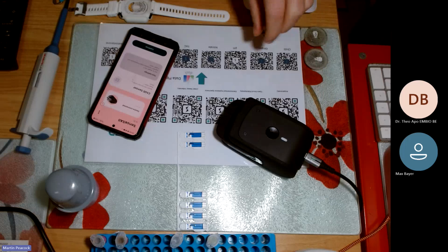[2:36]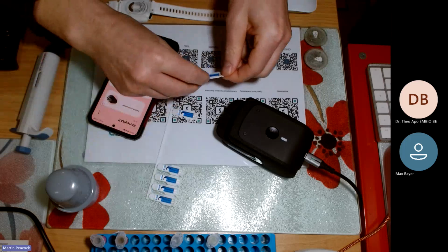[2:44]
So as I say, I don't want to talk at you. I want to actually just demonstrate. So I've got the app up in front of me at the moment. I've got the hardware in front of me here. The hardware is actually on. The device is connected. The app has told me. I'll tell you where to get the app in a short while. I'll take a sensor and I'll do a run. I'll put the sensor essentially into that.
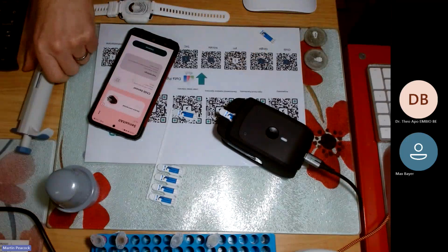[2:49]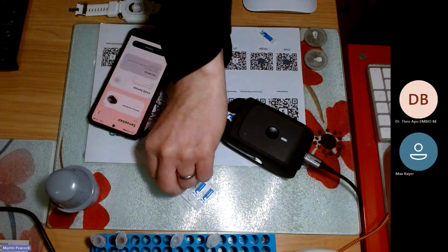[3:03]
Now, this is an OEM platform. This means that you do not have to do things that ZP has done, but you can build products and services upon it. So, for example, we've got a client at the moment who wants to do water quality testing. He knows that we can do anodic stripping voltammetry on this device, and therefore he's using it. He's going to use it for the testing of lead.
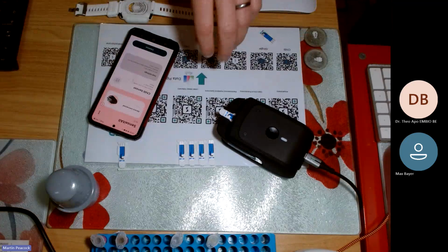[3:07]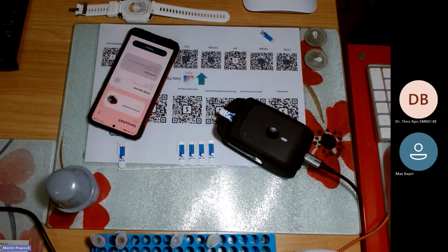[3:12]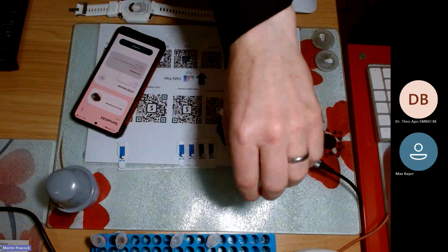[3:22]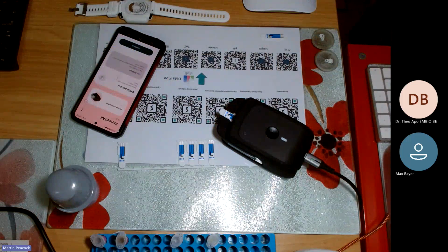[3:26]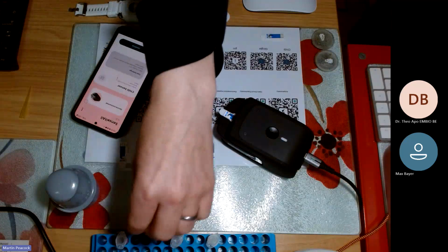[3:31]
It means that traditionally he would have built this hardware, built the sensors, built the app, and that would have taken 5 to 10 to 15 years. And now he's on the third unit with us. When I say unit, the third one of these from us, and he's done it extremely quickly. He only decided to pull the trigger, let's say, in the summer. Enough from me.
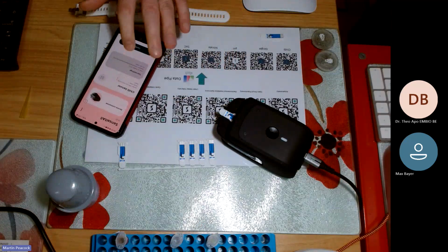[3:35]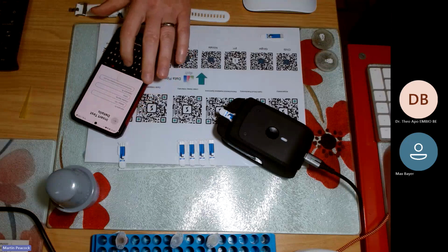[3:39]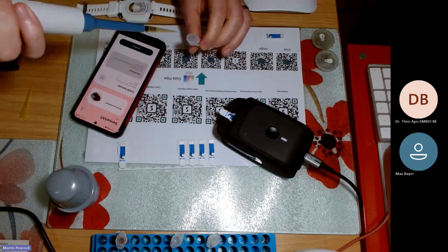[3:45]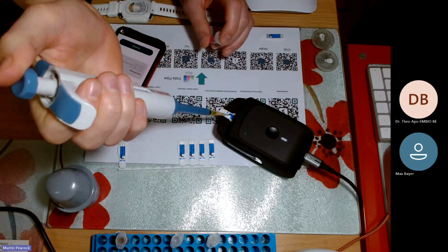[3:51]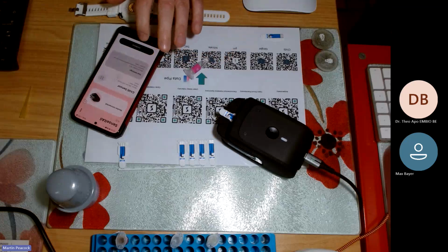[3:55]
So I'll take a sample, I'll put it on there. What I'll do is I'll make sure I know where the sample's going. I'm going to give it a name because, for me, it goes up to the cloud, so I want to be able to find it in a short while. The lovely thing about electrochemistry is it does allow you to put small samples on. That's only 50 microliters. I'm just going to tell it the dilution.
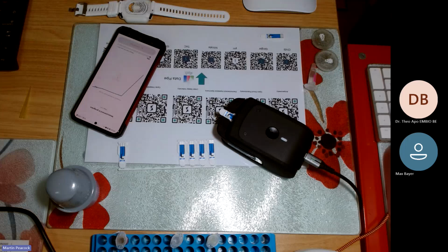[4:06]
If you're doing complex samples and you're working with ZP, we can teach you the joys of how dilution can really help you. The nice thing is, I'm not expecting my end users to always understand my, let's say, raw signal, and don't think that I'm going to leave them hanging with raw signal.
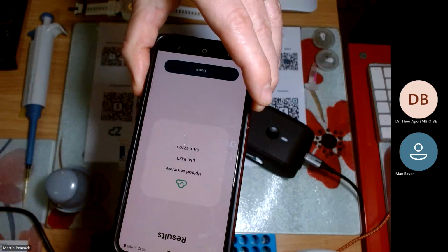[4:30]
It does just give me a nice idea that everything is working correctly, that I can actually see that raw signal. So now what I have here is I'm first of all going to hold it up to here. It gives you some really nice indications.
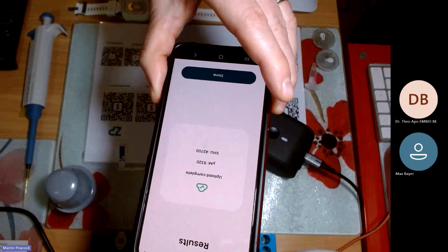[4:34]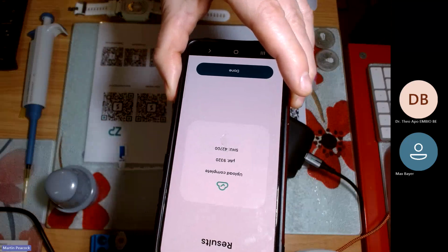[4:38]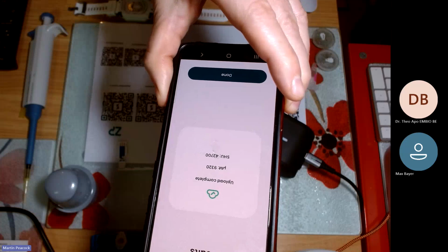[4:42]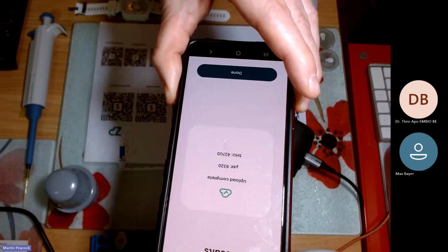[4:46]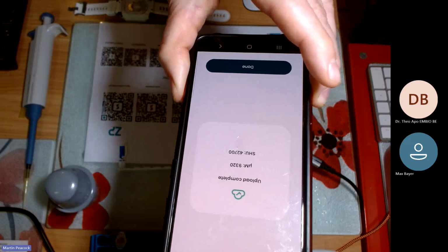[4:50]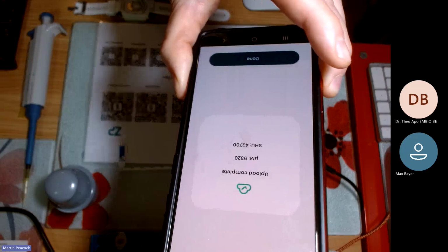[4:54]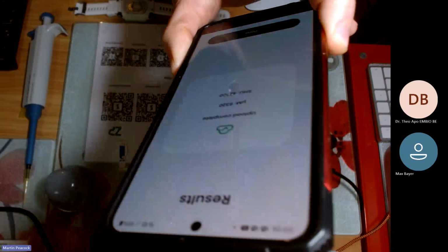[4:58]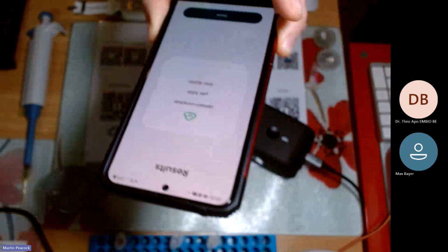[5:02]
The raw signal was actually processing in real time, but real end users don't want to know the open circuit potential for that phosphate sensor was this, or the open circuit potential for that potassium sensor was this, or the peak height for that pharmaceutical molecule was this. They actually don't want that. They want concentration. So in this particular case, that concentration is 9,320 micromolar.
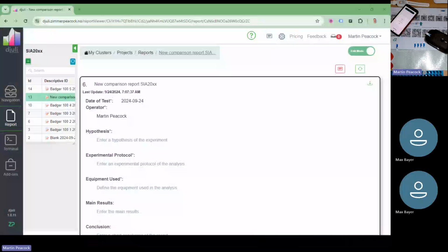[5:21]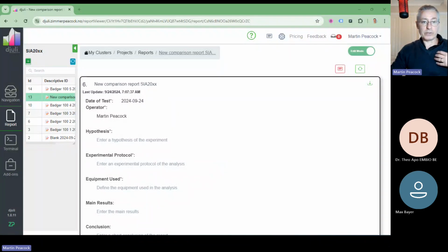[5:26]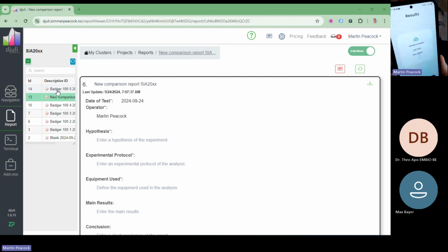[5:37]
Now what I'm going to do is change cameras for a second, and also change screens for a second, because it did say upload is complete, and this system actually works in super collaboration with a cloud system that we have called djuli. Don't think of this as being restricted to just things that we're interested in. You can actually use this entire platform for things that you are interested in. So I can see my data now. It's gone up. When it said upload complete on my phone, it actually meant it had gone up to here, and I can see that data here now, and I'll just go into it.
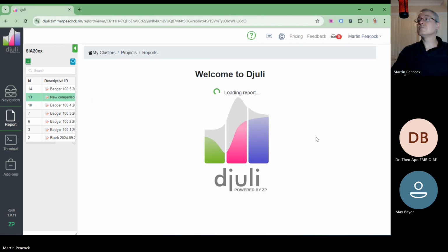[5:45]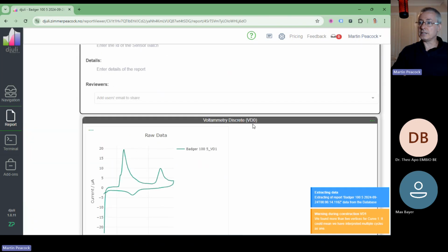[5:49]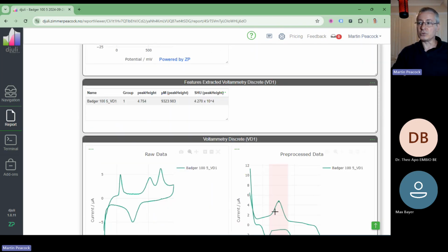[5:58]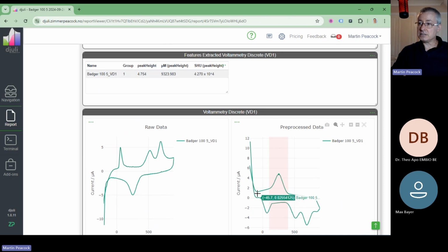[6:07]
So I can see now I'm in the data. I can see the raw signal. So that was tracking in front of me in real time whilst that assay was running. You can't interpret that in real time, but the raw signal did go up there. I got that concentration, 9,320, that we reported on the app, and you can see the raw signal. I'm not expecting you to be into your electrochemistry, but the raw signal is up here, the results are up here.
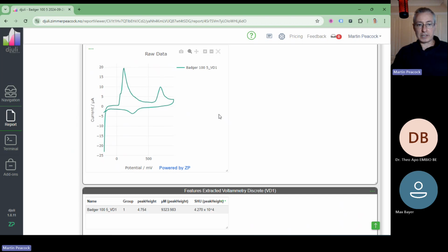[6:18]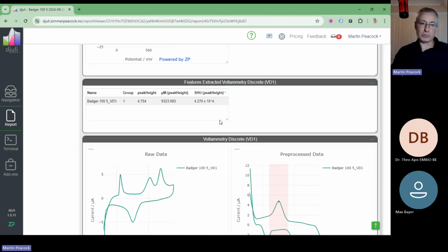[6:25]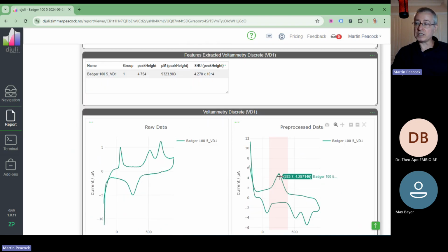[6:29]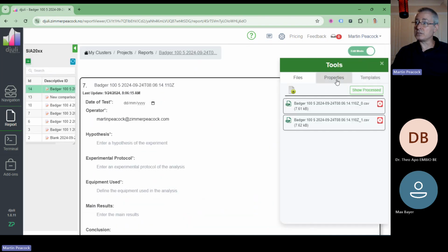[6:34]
And if you think about most scientific papers, most European projects, most development, especially in the world of electrochemical sensing technologies, people are often just left with raw signal. But this has actually got a data pipe built into it. So if I go into my tools, we tell it to pre-process the data, do what's called a low pass filter on the data. It didn't really need it. The data was already pretty clean. We told it to show the extracted value, which we did.
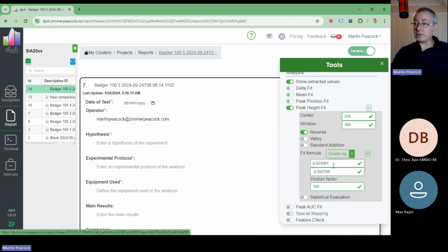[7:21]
It's basically doing a peak. First it's finding the peak, then measuring the height. So we tell it where to look for the peak, and then we tell it to fit it to this equation, which is really the calibration factor. And then we tell it what the dilution factor was. When I was doing that assay, I didn't make that very clear to you, but I'd already prepared the sample by doing a 1 in 100 dilution. So it knew where to look. It then knew how to turn peak height into concentration. It then knew how to take care of my sample prep, which involved a 1 in 100 dilution,
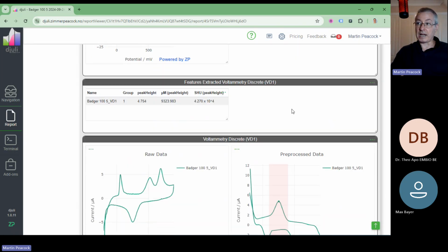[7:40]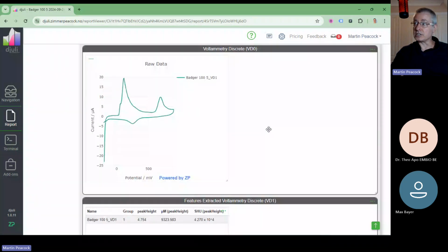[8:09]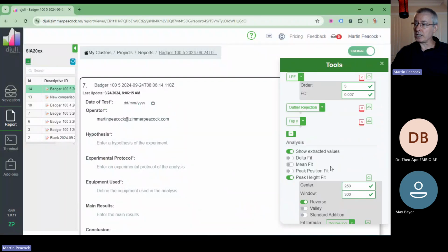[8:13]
because that was in the app. And then it did all those calculations in the cloud and sent the result back to the phone. So the end user gets an end user experience, but in fact all the processing was taking place in the cloud. And understand that that's a real advantage. For example, we ship this particular assay for measuring the capsaicin in chilies all around the world. And we haven't yet had a problem with doing the processing in the cloud, because the world is so connected these days that worrying about connectivity is kind of over. And if you can ever improve your algorithms, you can just put in new algorithms and improve the data processing.
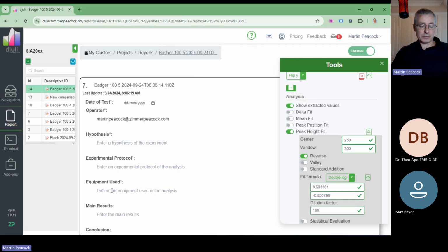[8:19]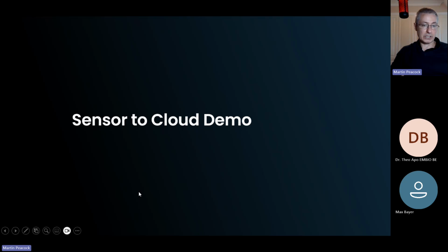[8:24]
So now what I'm going to do is slightly back off and talk about, let's do the presentation now. The presentation will tell you about those details. But if I was to summarize that, I did a live demonstration. I took one of our electrodes. I put a sample on it.
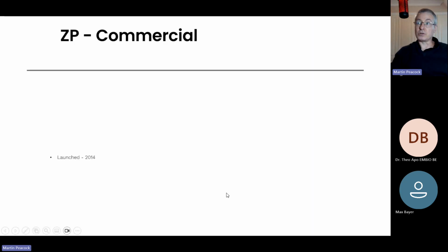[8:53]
The app, I told it to run one of the applications on that app by using the QR code. It ran it. It sent the data to the cloud. It processed the data and sent a result back to the phone. Now, once upon a time, people would have to build entire technology stacks in order to do all that. And now it's actually much more available.
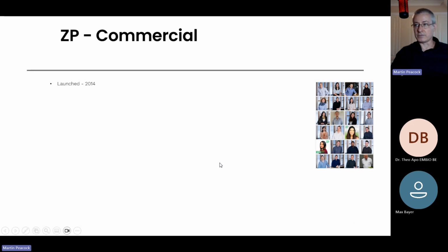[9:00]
So now let's go back to the boring part. Hello, welcome to Zimmer & Peacock. We were launched in 2014. I just want to give you a bit of a perspective on this. We are ISO 13485, so a lot of what we do is contract development, contract manufacturing. We produce a lot of screen printed electrodes, for example.
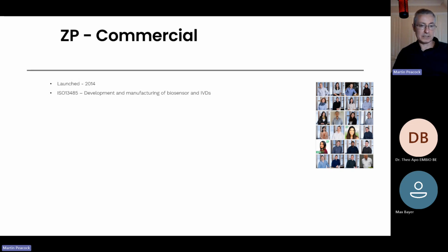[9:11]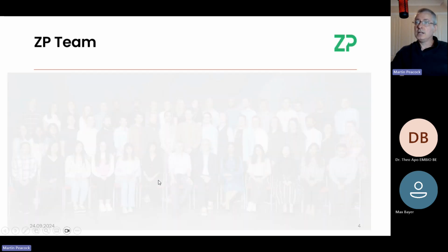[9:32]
I think we're one of the few places that actually uses cyclic voltammetry when characterizing those electrodes that we manufacture, to make sure that they're repeatable. Why do we do that? Because we use them in our own products. So we've got an extra degree of wishing our stuff to be good, because we use it ourselves, which makes us quite unusual. The team is not too big, not too large.
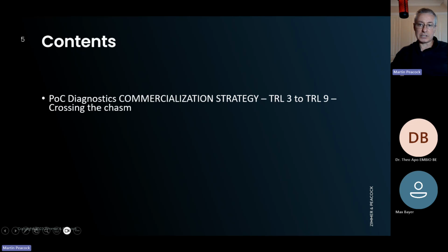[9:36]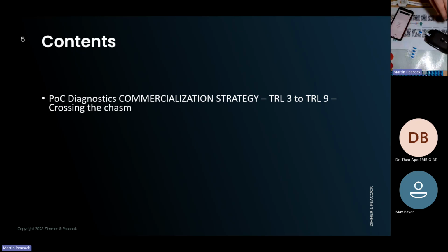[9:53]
Today I'm going to talk about commercialization. So this particular webinar, even though the instrument that I have in front of me is in part a potentiostat, so our academic colleagues can use it, our development colleagues can use it, I'm going to have a slightly different emphasis today. I'm more interested in talking about how it can accelerate ideas onto the market, or at least into alpha and beta users much earlier on.
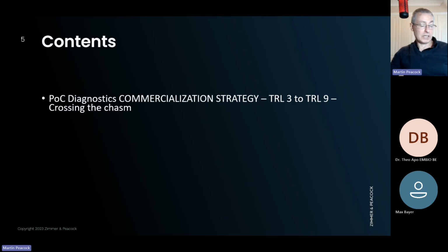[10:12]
For example, this is actually used in hospitals. If you gave nurses raw signals, it's just not fair. You can't give them raw signals. It's not going to give them a good enough experience. But of course, we can turn raw signal into concentration so quickly. So I'm very interested in commercialization.
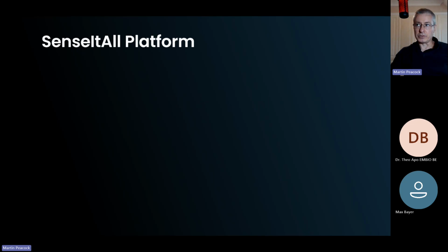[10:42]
I think that most research actually finishes at what's called technology readiness level number 3, and this really allows us to get to technology readiness level number 9. The thing that might be holding it back is the actual assay itself or the sensor itself. But in terms of a technology stack, it's very matured. I said I would do a demo, but I decided to do the demo up front because I think it's then more impactful and you understand why I'm talking about this.
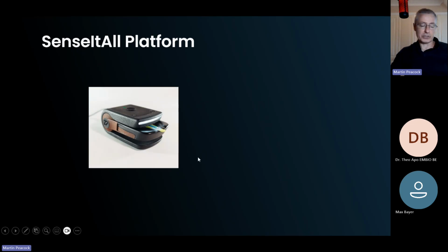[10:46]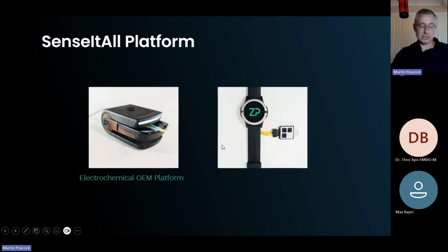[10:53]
Today, I'm only focusing on point of need or point of care diagnostics. We do webinars specifically on wearables. I do have a wearable technology in front of me. I'm always trying to say to people, if you're starting a company, just understand that wearables are about 10 times more complicated than doing a discrete test. When I say a discrete test, when I put that sample on there and I got a result immediately, that was a discrete test.
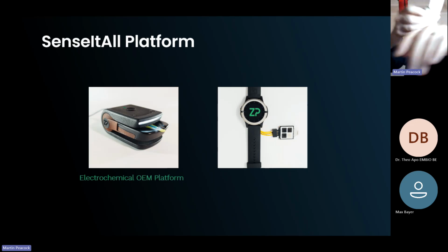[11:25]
If I want to continuously monitor the glucose in my body using something like a microneedle array like this, then that is a much harder program, and the funding required is easily 10x what it would be if I was making a blood glucose strip, which these days is actually very easy. But if I was making a CGM, a continuous glucose monitor, that's actually very hard.
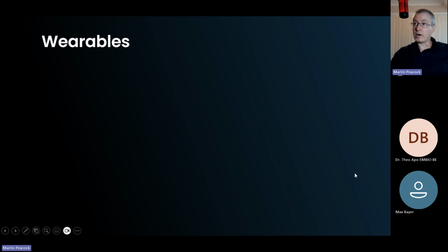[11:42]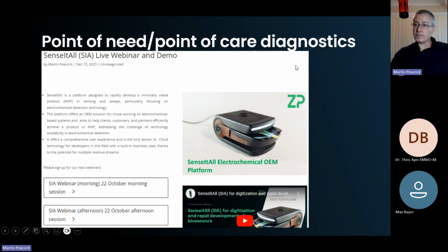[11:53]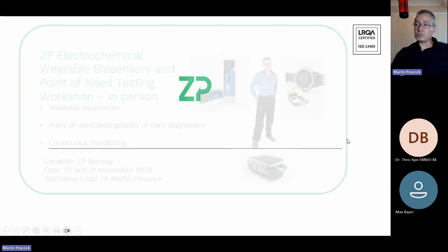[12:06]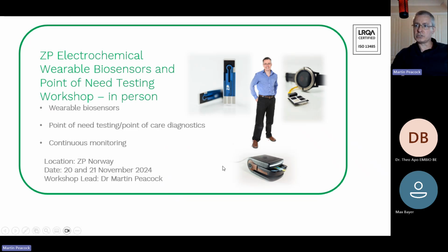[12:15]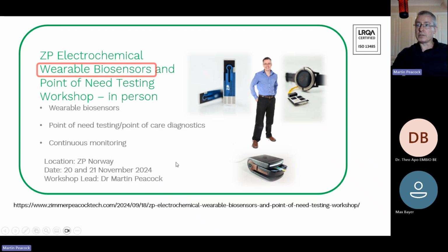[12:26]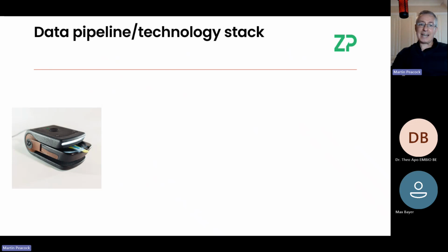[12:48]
Right. So we had a data pipe. I was showing you something where we took a sensor and put it into the meter. I put the 50 microliter drop on there. That's one of the best things about electrochemistry: sample size. And samples can also be quite messy. Let me see if I've got a messy sample in front of me. Yeah, this is a messy sample. I did a 1 in 10 dilution with this one. It's so rich in the compound of interest that I actually need to dilute it more. But I could test it, and you can see that it's quite opaque.
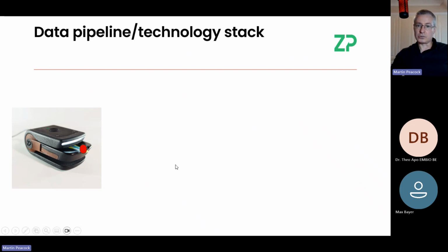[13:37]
So if you're trying to do things like water testing, when you're measuring using colorimetric assays or spectroscopy assays, or at least photospectroscopy assays, they often have to be quite transparent. With electrochemistry, you can test blood. Obviously, that's the classic glucose strip. They do not need to be particularly clean.
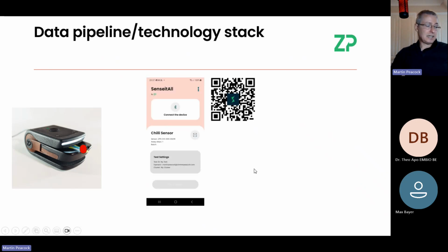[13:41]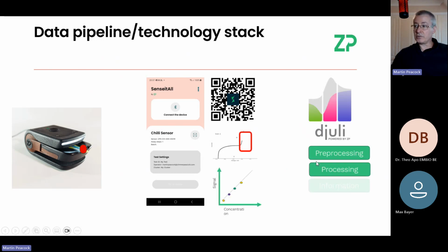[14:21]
When I did that test, I actually have a whole array of QR codes in front of me. This system is not menu driven, it's actually QR code driven. The QR code tells the app what to do. The app runs the meter. The meter essentially energizes the sensor. On the sensor, there's the liquid sample, so we get some information or data out of that sample. The data in my particular case was cyclic voltammetry, which can be quite complicated, and you can't ask real people to interpret that. But because of the data pipe that exists in a system called djuli, we were able to pre-process it, process it, turn it through the calibration into information, and send it back to the phone and give a real user experience.
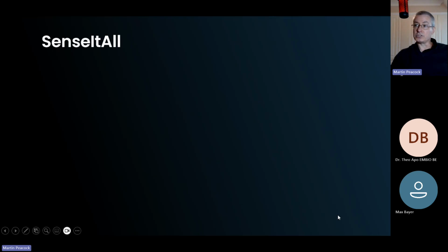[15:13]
There are lots of people making lots of electronics, which lots of people in academia and startups are using. But when you look at the way these instruments operate, they're sort of 20-year-old legacy designs. If you were to redesign it today and think about what's the real problem you're trying to solve, it's not really about making bigger and greater potentiostats. The problem is that many of these assays never leave the lab and get into the real world: people interested in water quality, human health, food quality. These are the real beneficiaries. And if you want to financially benefit from it, you have to be facing those people. This is what this technology stack is all about.
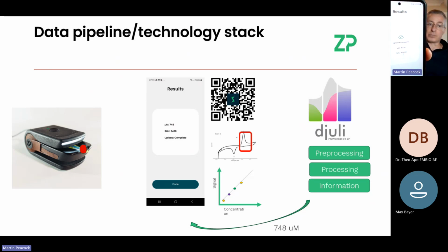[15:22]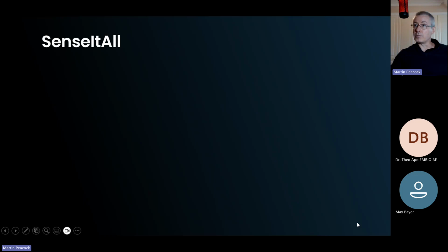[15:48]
I should have finished by saying, of course, that the information then came back to the phone. So my end users never have to look at my cloud, but it's nice because the data is always there. So when you're trying to do water quality testing in deep water bores in, I want to say Afghanistan, but maybe Pakistan or somewhere like that, they can do that rather remotely from you. The data goes to the cloud, and you can do some quality checking yourselves, even remotely.
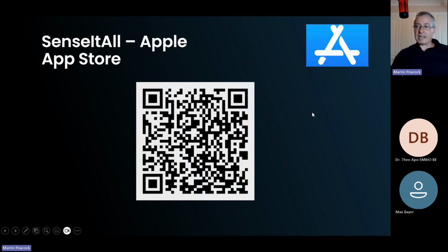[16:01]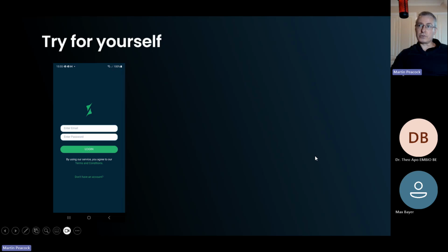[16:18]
FYI, I'll send you a recording of this, but the app that I'm using is not some hidden app somewhere. It has been developed to the standard that it's actually on the Google Play Store, so it's Android compatible. It's also on the App Store, and getting onto the Apple App Store requires another level of quality and diligence. So it works with iPhones or iOS systems, and it works with Android systems as well. You can try this for yourself if you use those two QR codes. I know they went quite quickly, but I'll send you a recording later on.
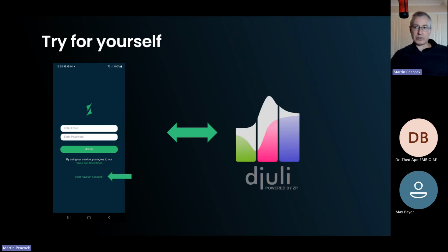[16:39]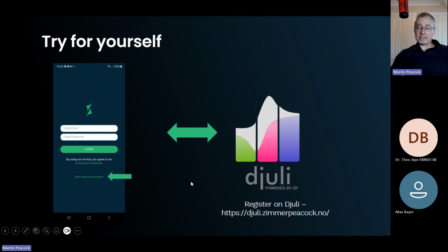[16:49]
You can scan those QR codes, at which point it'll install an app and you won't have an account. It says don't have an account, so you will set up an account. But understand that when you register that account, you're registering in the app, but the app is a portal to a cloud system called Djuli. The app will reside on your phone, and when you run assays using the app, it'd be very hard for you to run assays because you won't have the hardware.
But just know that that app is actually synchronous with a cloud system. So everything that happens through the app is all sent to the cloud. So it's important to see because when you register that account, you'll set up essentially an email and a password, and just understand that you can go and later on log in and find all the raw data and all the history of all the tests by just going to djuli.zimmerpeacock.no. And when you log in there, you're going to say, oh, that's all the tests I ever did.
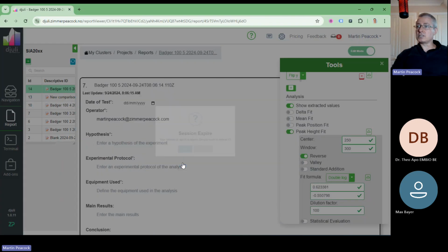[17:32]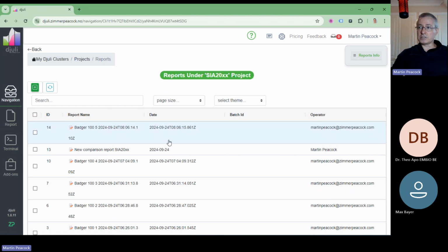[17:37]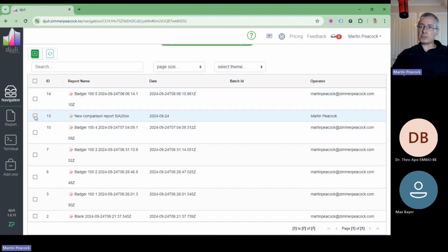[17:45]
And I realized I did that quick demo, but I'm actually going to break for a second and realize that this says the session's timed out, but hopefully I can come back in now because I should have actually done it; I was a little bit quick on it. I've got all these tests that I've been doing, but this platform is extremely powerful. I'm just going to delete that for a second.
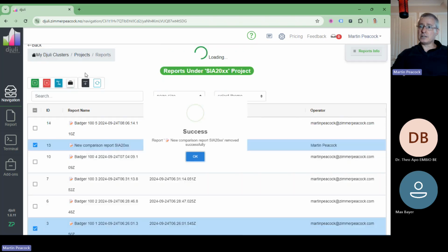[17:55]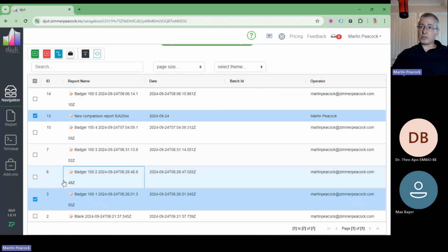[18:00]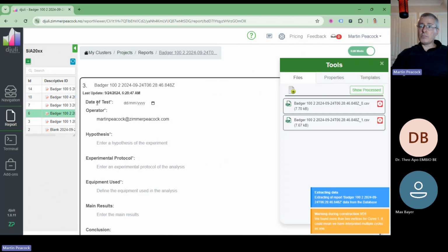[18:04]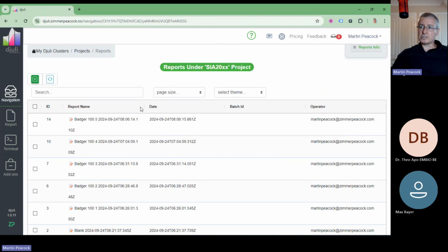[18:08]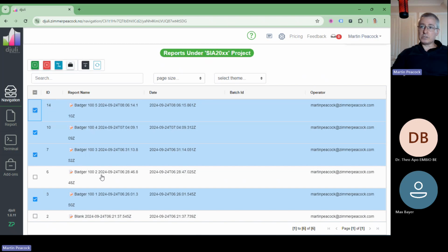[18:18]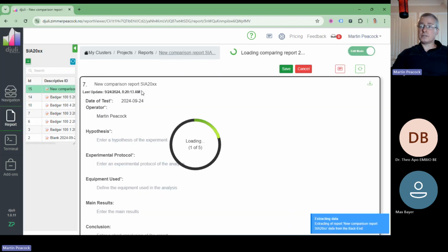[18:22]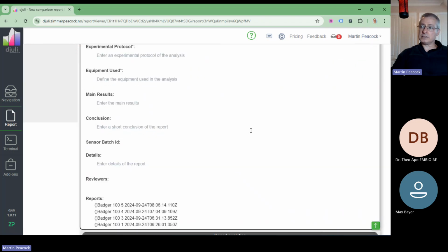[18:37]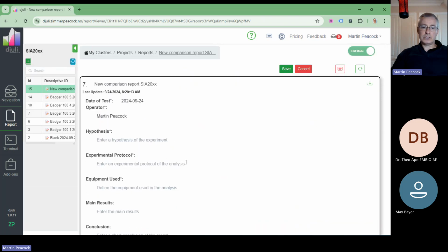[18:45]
And what I want to do is pretend, for a second. What I'm going to do is go into here. So let's say you are monitoring, you know, this is like the end user experience. So let's say the end user had been monitoring some analyte out in the field, and they wanted to actually compare how that analyte was tracking with time. I can take all these individual tests, and I can actually compare individual tests, which it's now doing, and it will come now. But what it'll do is it's actually going to look at all those individual tests and track them. So I can see I had 100,000 here, 40,000 here, 50,000 here, about 43,000 here. So there's a lot of analytics also possible in that cloud that's all been built.
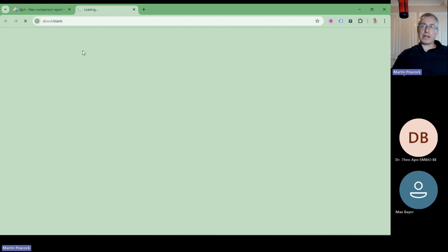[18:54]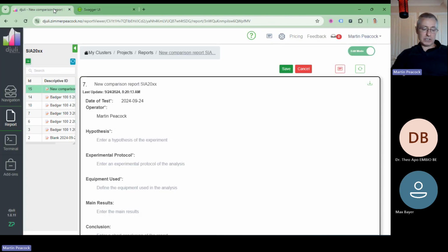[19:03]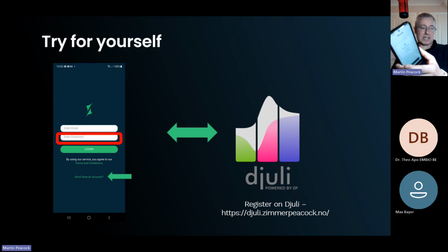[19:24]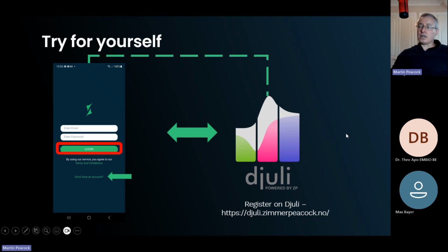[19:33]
I should also mention it's actually got an API built into it as well. If you're not clear on what an API is, it's that kind of language that allows one, let's say, online service to talk to another online service. I will slightly change gears and go back, because I was bringing that up because I actually wanted to emphasize that all the data is actually going to Djuli. In fact, when it happened, who did it, even geolocations in there these days. And you can compare reports as well. So Djuli is a pretty powerful engine. You don't want to put all that onto an app, because the app screen is really just for gathering the data in the first place, but analysis later on is also possible. And as I say, these two things are synchronized.
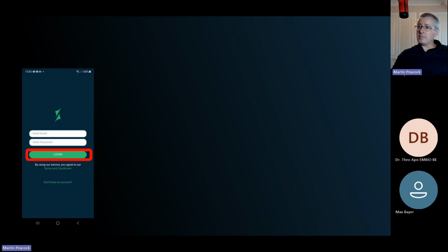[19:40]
You can try for yourself, but you'll only have a certain amount of trying because you won't have hardware. When you log in, the first thing that it's going to want to do is access my camera, because it wants to scan a QR code. It wants to know, are you going to use me as a potentiostat? Are you going to want to do amperometry, open circuit potentiometry, EIS, linear sweep, open circuit potential, cyclic voltammetry, square wave voltammetry? Or do you want to do an actual analyte? Do you want to do nitrate, phosphate, potassium? Do you want to do pH? Do you want to do glucose, etc.?
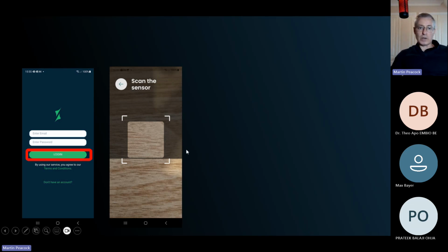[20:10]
I suspect that most of you will end up building either your own sensor or your own application upon one of our sensors. So, for example, if we've got a nitrate sensor, let's say potassium, that's a very mature sensor for us. If we have a potassium sensor, it works perfectly well. But most of our work will be in potassium in blood or potassium in dialysis solution. Your potassium could be in runoff from a field or something. That is a different application and will end up with its own sample preparation, and it will end up with its own algorithm. If you're joining late, don't worry about it.
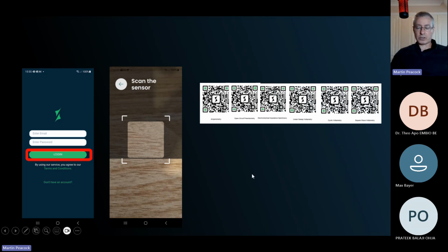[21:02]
Everything is being recorded. I did do a live demonstration where I took a sample, put it on the sensor, ran the meter, sent the data to the cloud, and showed the guys that the data's in the cloud. But so when you first log into the app, it's going to want to access one of many QR codes.
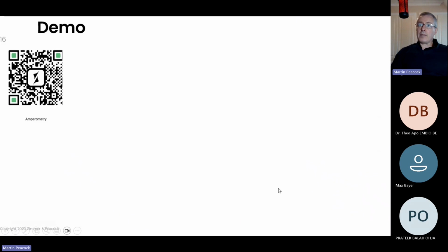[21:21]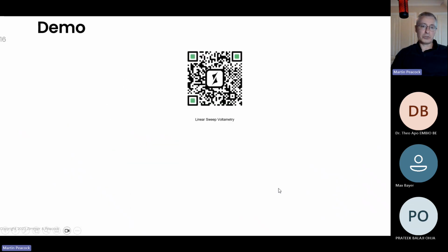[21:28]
The whole system is, in the end, as I say, actually designed really to get either startups or academic research out of those technology readiness level 3 levels and get the data to the cloud. So amperometry is one of the QR codes, so it can be used as a potentiostat, open circuit potentiometry, EIS. You use EIS for things like proteins, etc. Amperometry, things like oxidase enzyme assays, dehydrogenase enzyme assays.
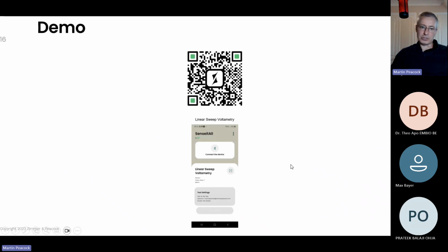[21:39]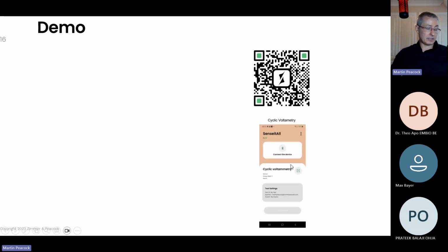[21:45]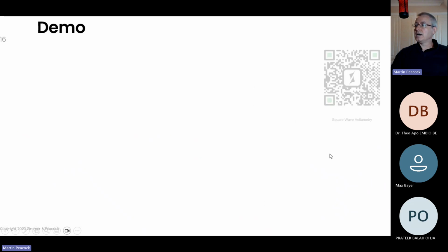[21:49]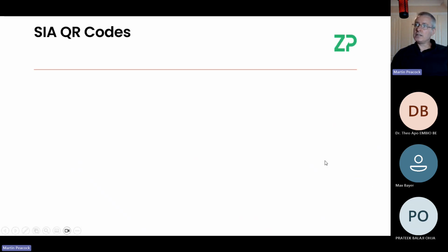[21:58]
Linear sweep voltammetry, you could do it for small molecule detection. Cyclic voltammetry, we use it under license, and there's IP behind it for capsaicin detection. Square wave voltammetry, very sensitive technique, useful for small molecules, also for immunoassays as well.
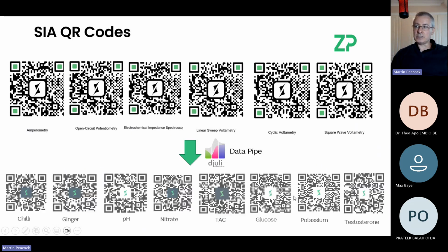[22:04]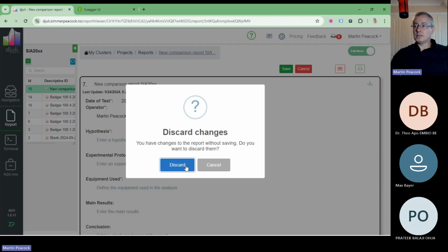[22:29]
But because of that data pipe that I showed you, you saw that even though I did cyclic voltammetry as the analytical technique, I actually gave somebody the concentration of capsaicin because it went through the data pipe. And so I think this is one of the first times in history, or maybe the first product or service of its type, where electrochemical raw signal can go to the cloud, get processed through a data pipe. And to be honest with you, that data pipe is not at all
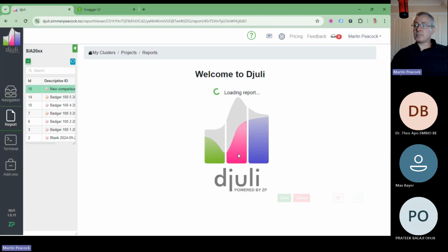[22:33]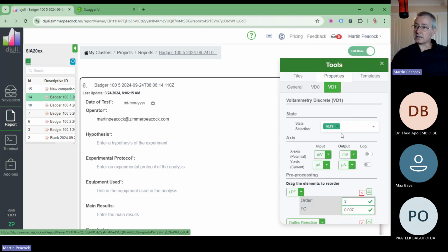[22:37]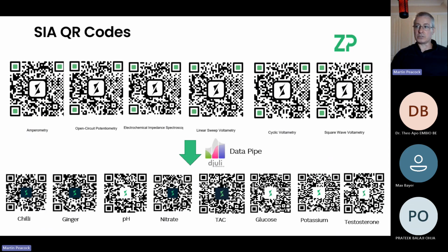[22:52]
That data pipe is not hard. It's not programming. It's actually sort of selecting, what filter shall I use? There's more filters than you could ever do. Outlier rejection, show extracted data, where to look, here's the algorithm. This is not coding. This is really just selecting or entering values into fields. So it certainly speeds up the development path a little bit.
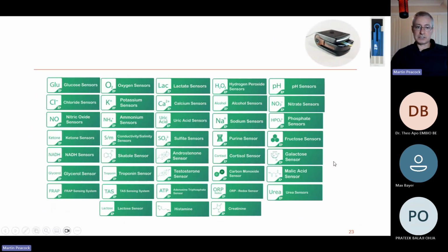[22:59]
We do have a lot of sensors existing. Even if we have a sensor, it doesn't mean it would necessarily work in your application. To make a sensor work in a new application, it has to be characterized in those samples. So if I was measuring glucose in food, that would have a certain sensitivity. If I was measuring glucose in blood, the sensor may have a different sensitivity, and you would have to do that characterization. So even if we have the sensor, you may still have to do some characterization work. But we do have a lot of these sensors, and everyone that's rotating is already on the app.
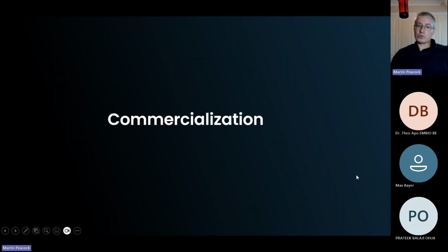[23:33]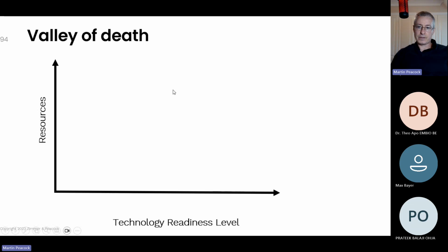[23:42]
Now I'm going to talk about commercialization. I'm going to talk about the problem in startups and also in academia, the sort of valley of death. People were talking about this valley of death 20 years ago. And if a problem is not being solved, then the way people are trying to solve it is obviously not working. So I think at ZP we had a kind of epiphany of how to solve this valley of death problem in the world of specifically electrochemical assays, electrochemical sensors, and electrochemical biosensors.
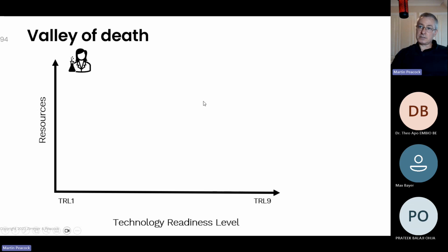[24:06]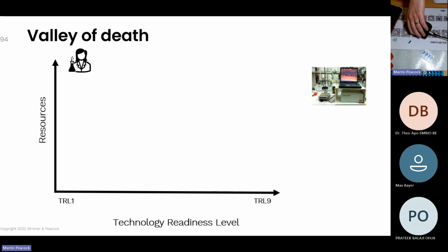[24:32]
So let me describe the valley of death. Somebody's doing some development either in academia or in a startup company or research. They're often using instruments that are ugly, full of cables, maybe large, but not necessarily large, maybe have awkward slots on them, etc. So these are not user-friendly instruments. I would argue that the demonstration that you saw earlier was a really elegant user experience. I can take that sensor out, I can put it back in. It's just clicking, no awkward slots. This has LEDs on the front of it that guide that user experience. You saw how smooth the actual app was.
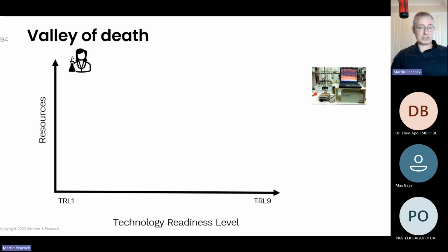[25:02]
So at the moment, a lot of research is taking place on instruments that are dedicated to the R&D effort. And they've got a 20-year legacy on them, most of these instruments. In fact, some of these technologies are almost pre-internet. They're certainly Windows based. They're not thinking about people who are much more used to using their phones these days, and they're never thinking about the application of that science. They're dedicated to the generation of that data, but not the translation of that data out to the real world.
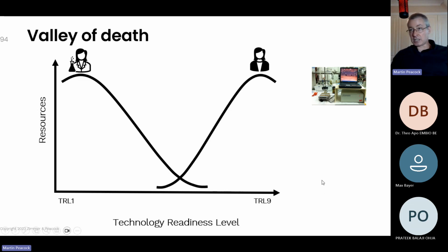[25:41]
So I think that's what's holding back a lot of research. All that research is happening on instruments that are fit for purpose for R&D, but there's actually no way of translating that assay rapidly into the real world. So you've got entrepreneurs and companies that actually do want to do that translation.
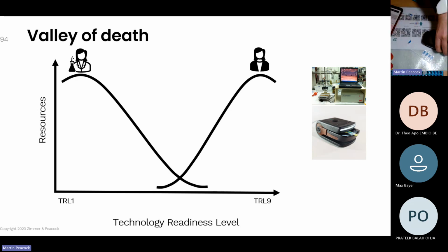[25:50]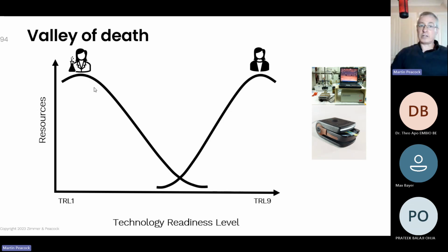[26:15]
And so we're saying, okay, here's one instrument that, by the use of QR codes, I can either run amperometry on it, I could do cyclic voltammetry on it, or I could do potentiometry on it. So suddenly it can go from lab experiment to actual analyte very quickly.
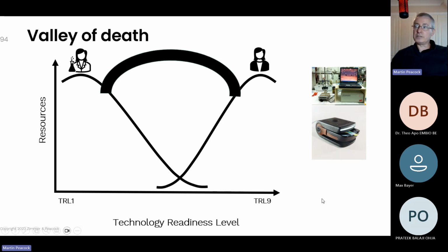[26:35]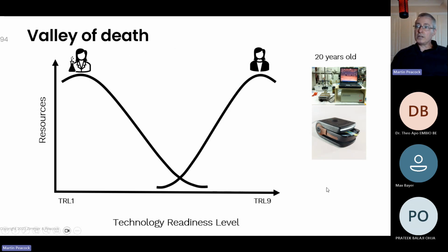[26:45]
And so this valley of death describes the idea that most research, whether it's in academia or commercial, actually finishes at TRL3, technology readiness level number 3, some sort of proof of principle. But really to be commercial, you have to get to a much higher technology readiness level, TRL9. And governments, both US, Europe, Asia, try to put a lot of money into closing this gap. But actually, I think we're going about this the wrong way.
At ZP, we're closing that gap by literally making the same instrument that would otherwise be used for doing research also the same instrument that can be used for commercialization. If you look at the technology industry, people are always building services upon each other's technology stacks. But in the deep science industry, like biosensor development, people make their own sensors, their own electronics, their own apps. But I actually think that we'll be more successful if we think of ourselves as app developers.
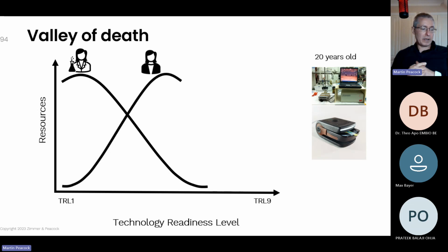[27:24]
So, we've made a platform on which people can develop. When I say apps, I don't just mean software applications. I mean that there's also all the science that needs to go around that. So they're applications, but they're upon a platform. So rather than having this big gap between what happens in the lab and what happens in the real world, you can try and bridge that gap with funding, which has been happening for more than 20 years, but it's not that successful. In my domain of electro-analytical sciences, there are about 25,000 papers produced per annum. And how many of those spin out into any kind of product? I think it's less than 1% by a long way.
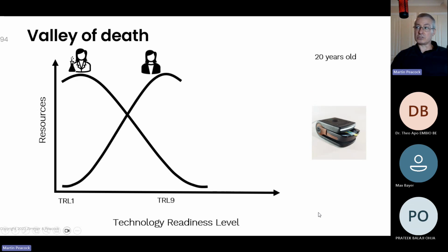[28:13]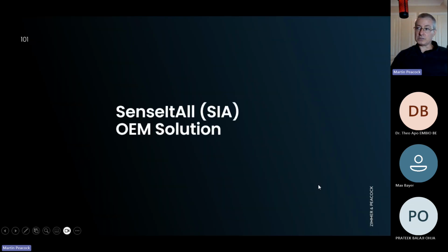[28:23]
It's less than 1%. How do you close the gap? Actually, you don't need to pour as much money in. You could close the gap by making the instruments between lab and the real world the same instrument. And it's much more inspiring to scientists, students, PhDs and postdocs when they're using an instrument that actually looks like a product, because then they can imagine how the end user will actually use that instrument.
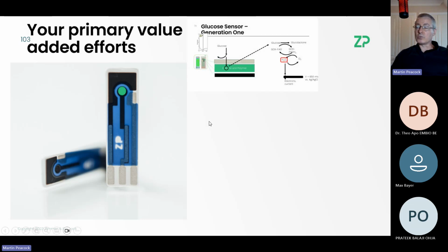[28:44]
So this is an OEM technology from ZP. We're saying to people, if we don't have the sensor, then you will develop the sensor. But in fact, we've developed a very easy to use, very reproducible screen printed electrode, which really speeds up the development. A lot of what's holding up research and development is irreproducibility in screen printed electrodes. That's something that we've really worked upon.
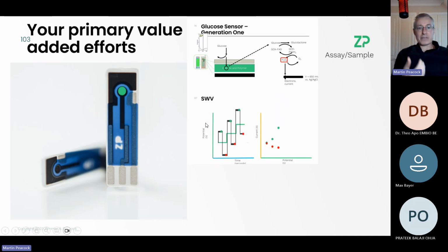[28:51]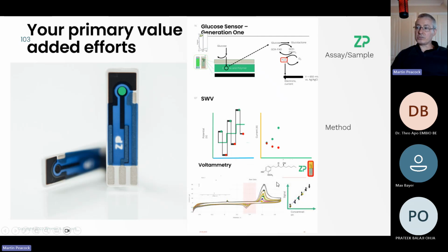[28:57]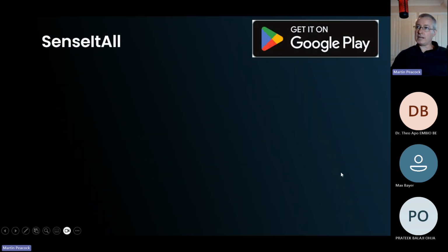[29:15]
So it does leave you with hard challenges like, what is that assay? What is the method of excitation? Are you going to use square wave voltammetry, amperometry? You have to optimize that. And then what's that calibration routine? How are you going to turn that, in this case, peak height into current? Sorry, not current, into concentration. But these are things that you would do anyway, except if you do them on this instrument, you can then release it as a product on this instrument as well. So it really closes the gap.
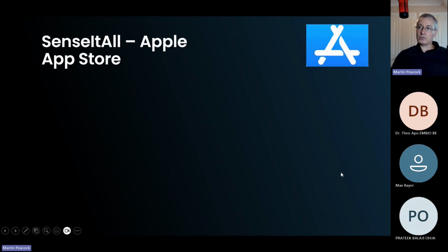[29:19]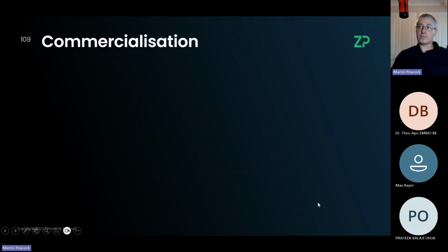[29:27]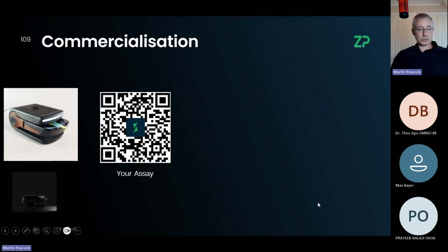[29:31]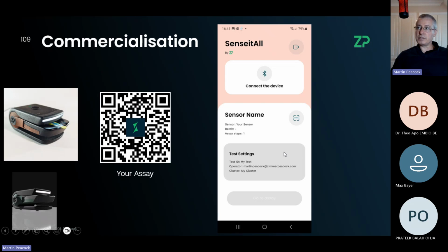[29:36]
When I say commercialization, this is an important QR code. If you scan this QR code, you're going to understand that ZP is trying to be a true platform. And that means that you'll be able to edit this title, edit that logo, edit this color scheme, and give it your own sensor name. All these fields become essentially your fields. So you can understand that ZP is in the background. I'd like to say it's like running on an Amazon server or Google server, or maybe an Oracle server.
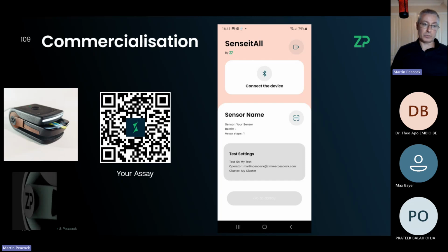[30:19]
It's not clear to the end user that you are running upon this platform. Why would you do this? Because you're going to go from taking 5, 10, 15 years and probably having a 10% probability of success to being able to do this in 2 years. It's much better to try something and not be successful in 2 years than to try something and not be successful over the course of 15 years. It could be half your career, let's say.
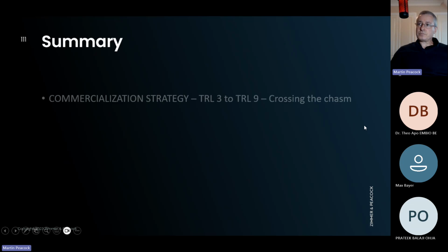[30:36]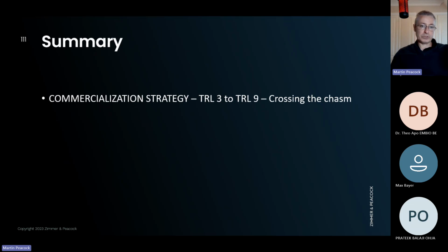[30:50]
So in summary, and I've actually come to essentially the end of it now. We're trying at ZP, and I think the demonstration I did earlier on was to show you how robust this is. We have a platform upon which you can develop assays, or you can use one of our existing sensors. But if it's our existing sensors, you may still have to characterize them in your particular application. But we think that the platform allows you to go much quicker from TRL3, which is really the gravestone of most development, that people really don't get it out of the lab, to a much higher technology readiness level, because in fact it's much easier. And I did do a demonstration of it as well.
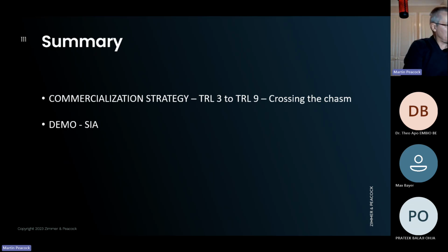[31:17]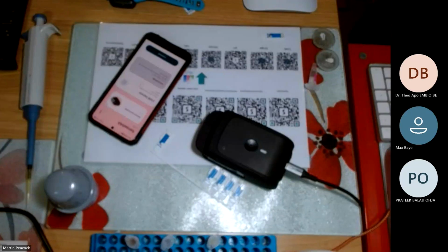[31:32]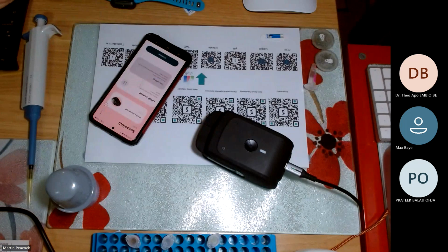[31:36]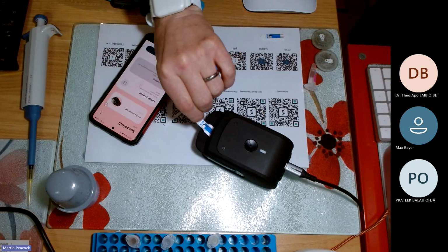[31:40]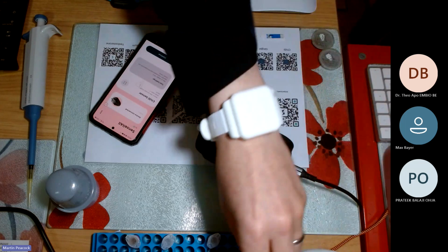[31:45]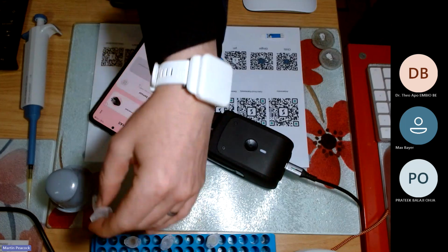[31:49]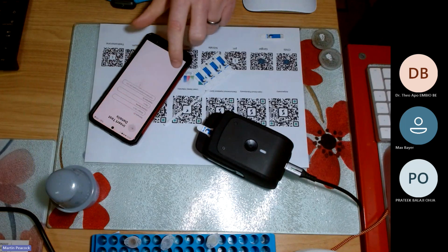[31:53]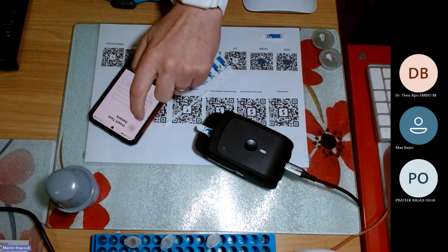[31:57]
Because one of you came in slightly late, I'll just do a quick demonstration again, but this is a repeat. So if you've already seen this, no particular issues. I'm just trying to figure out which camera to go to. I'm just going to do a quick demonstration to show you that this is super easy. So I will take a sensor. I will put the sensor on there. I've got a couple of samples here. Yeah, I'll take this one. Take this sample. I'm just going to give this a name, which I will do now. And I will put the sample on the sensor.
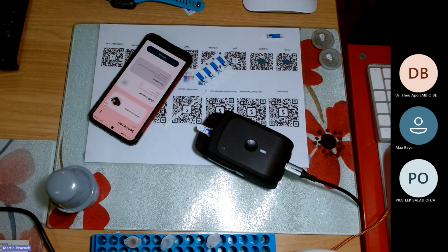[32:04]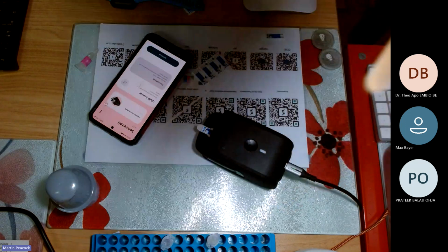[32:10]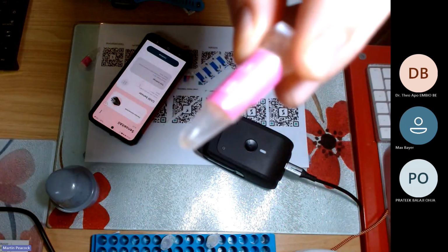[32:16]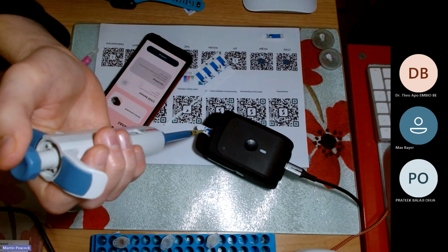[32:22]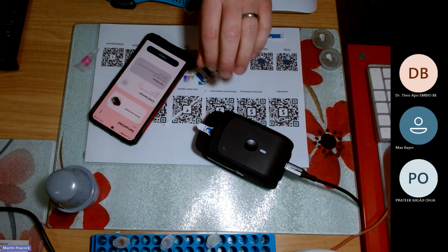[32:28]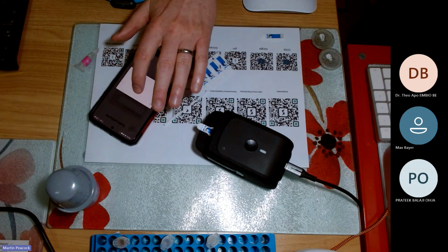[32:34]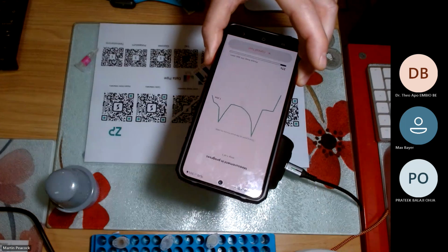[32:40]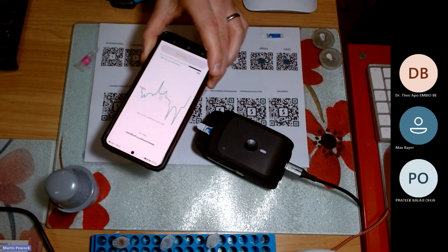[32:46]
Repetition of a statement from earlier on, but I do love this about electrochemistry. Samples do not have to be large for electrochemistry, and they also don't have to be particularly beautiful either. This is not a beautiful sample. It's quite cloudy, in fact. That said, let me put the sample on. I realize I didn't actually close that, so I'm going to close that now. So that's made electrical contact. I will go to continue. I will tell it the dilution that I used to prepare that sample. I'll start the measurement. And now the user gets some expectation that this is actually running. So it's running.
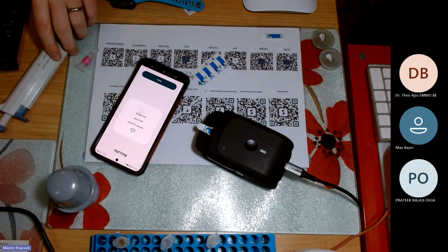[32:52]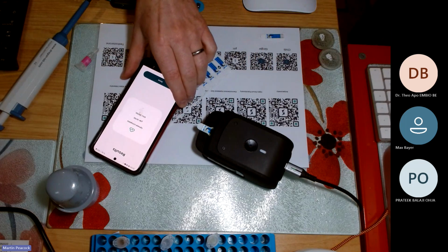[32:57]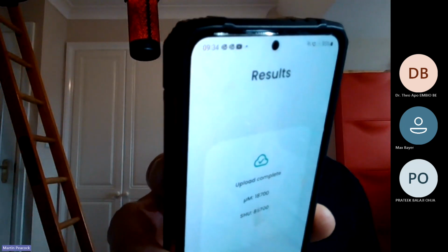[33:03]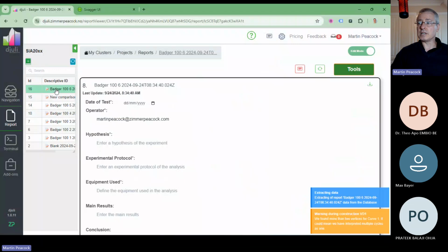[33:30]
Of course, I'm not expecting the end user to actually interpret that signal. But what I am doing, and I'll just change my cameras for a second here, is the crazy thing is, and I'm sorry that that's a bit bright, it says upload complete. You get a nice picture of the cloud, and it gives you the concentration. It actually processed all that data in the cloud and sent it back in real time. And I'm going to share my screen with you just to give you that final look. All right, cool. And that was a test that I just did, and it just went up to the cloud.
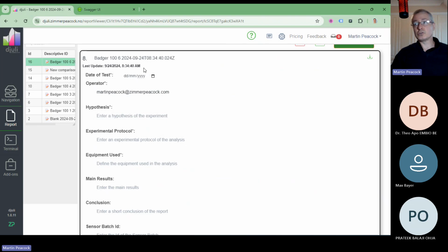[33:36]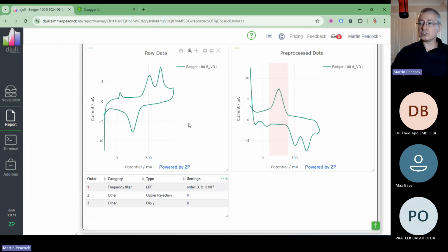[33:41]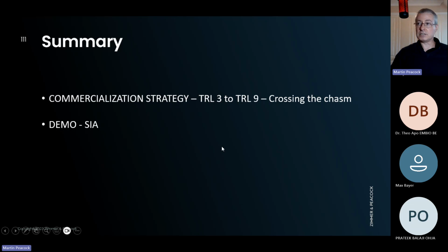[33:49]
I can see the time and date. It's using universal coordinated time. I can see who did it. I can see the raw signals. I can see the processed data, and I can see the result that also was sent back to the phone. So I think I just did that just because we had somebody join at the end.
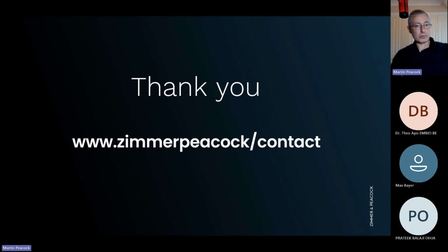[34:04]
But this webinar really was all about this being a platform. It's at a very high technology readiness level, and the openness of it means that you can actually develop assays for it or take sensors that we already have and use them on it in new applications. And I feel like this is a real 2024 technology. It doesn't have the historical legacies of Windows-based equipment, etc.